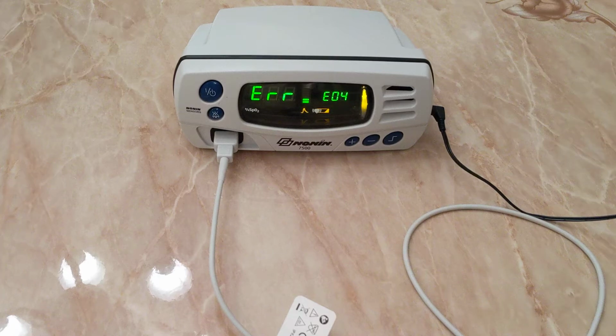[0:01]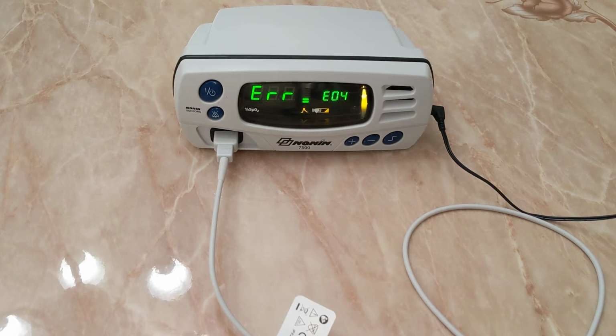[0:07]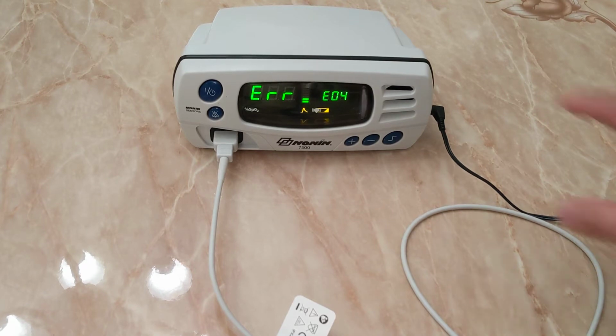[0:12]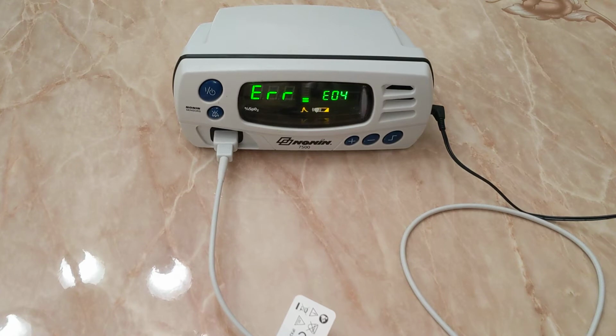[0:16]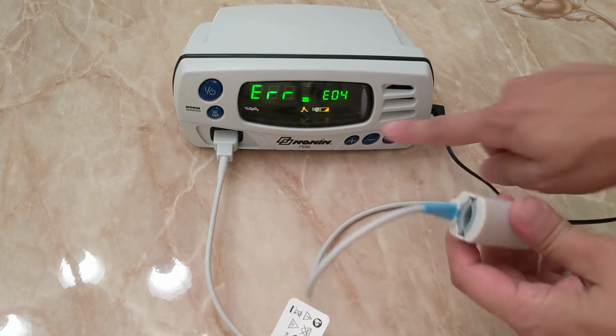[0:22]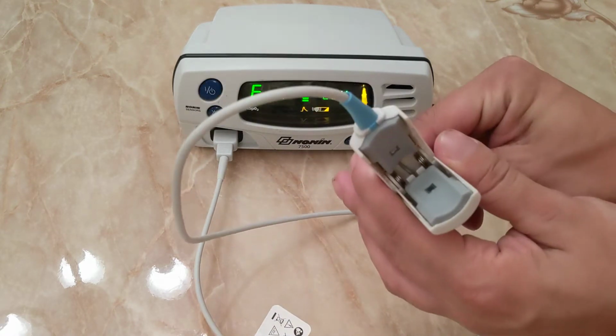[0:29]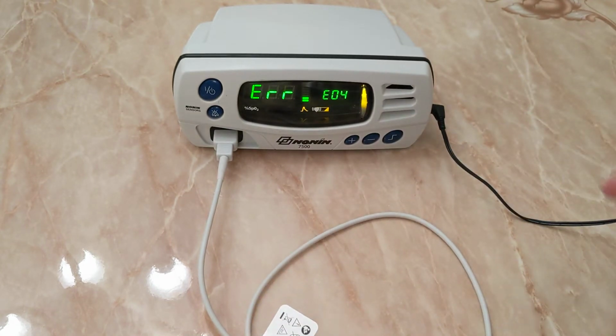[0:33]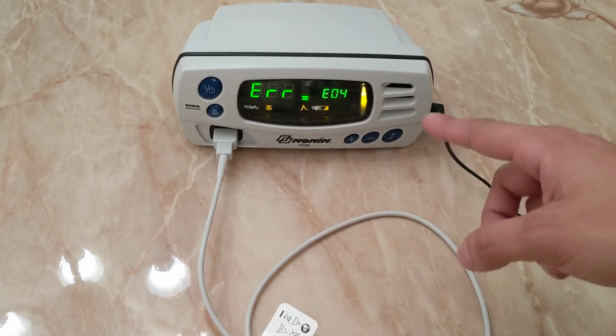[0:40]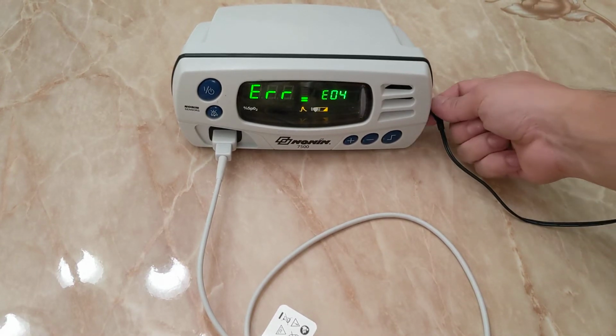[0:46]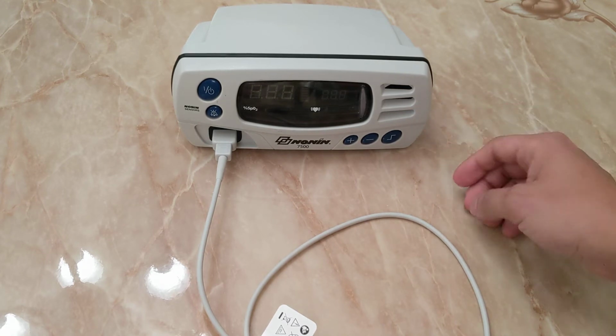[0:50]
And today we have the Nonin 7500. If you didn't get that because of the beep, it's the Nonin 7500. We have error code E04, and as you can see, there's a little battery image that's popping up, and the light on the finger sensor is not turning on. So, I looked up this code and they said that it's related to battery issues. And sure enough, one way to test this is by removing the plug, the monitor immediately shuts off.
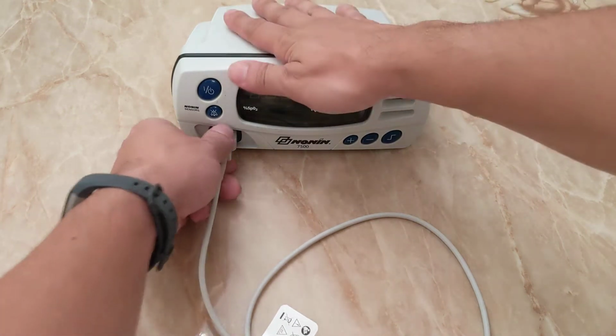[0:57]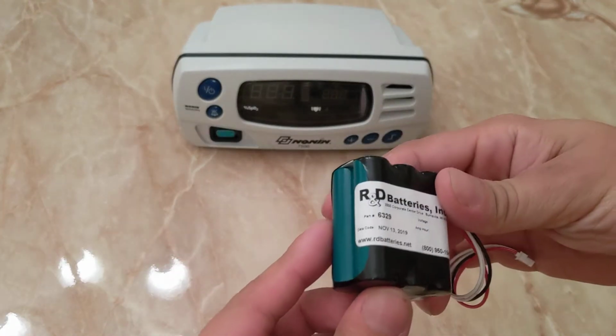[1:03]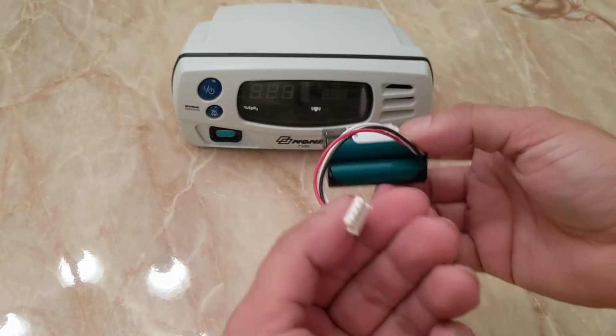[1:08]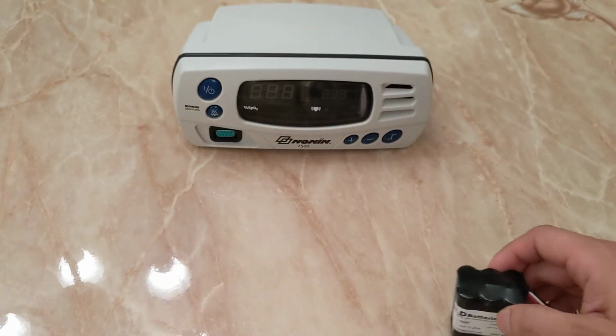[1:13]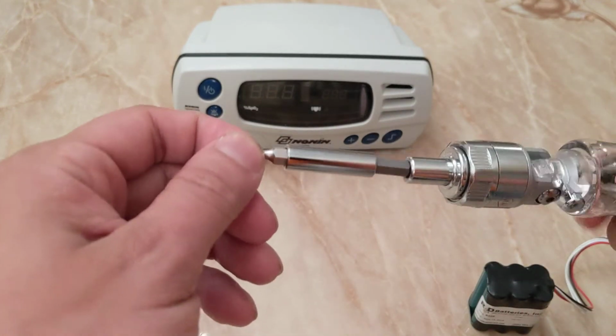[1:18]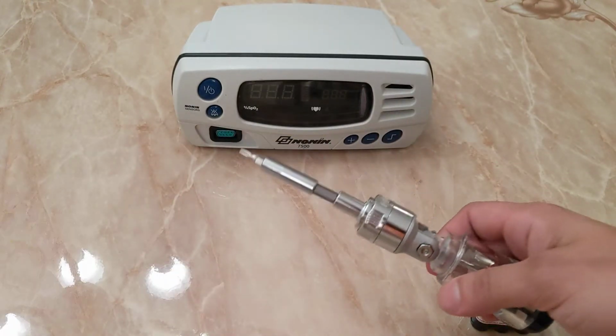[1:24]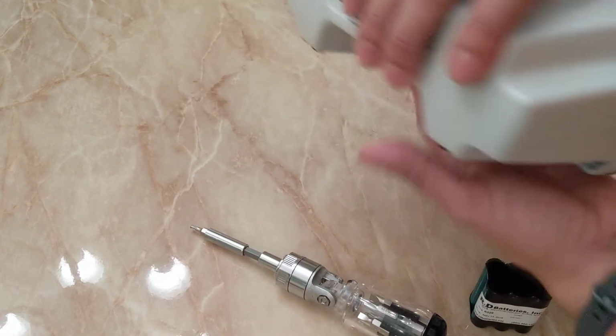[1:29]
So, today to repair this battery issue, we have ordered a battery from R&D Batteries Incorporated, and this is what I got, somewhat inexpensive, and you will need a screwdriver with a T15 screwdriver bit. That's all you'll need for this repair. So let's get started. You have four screws to remove
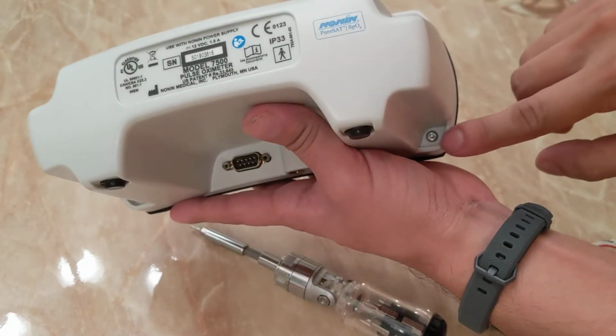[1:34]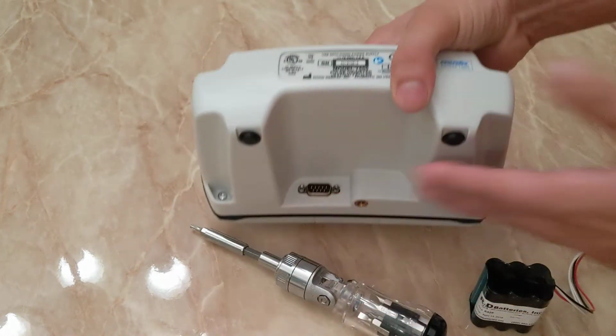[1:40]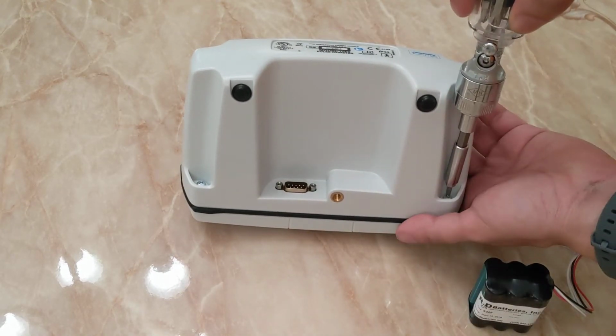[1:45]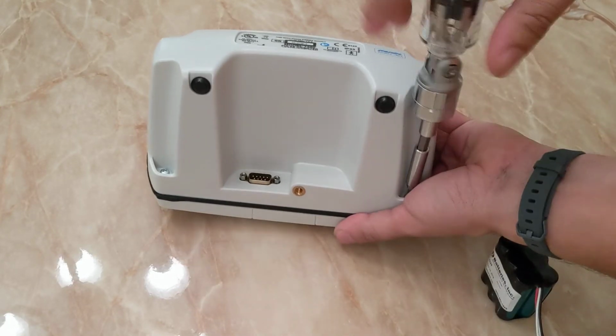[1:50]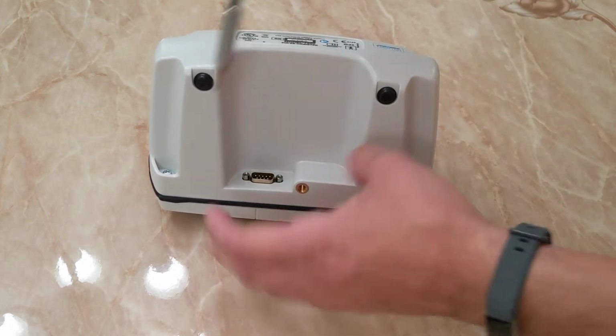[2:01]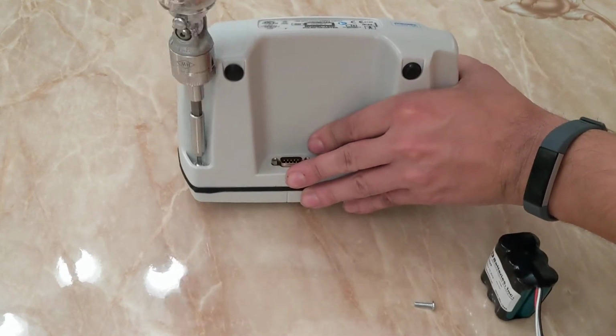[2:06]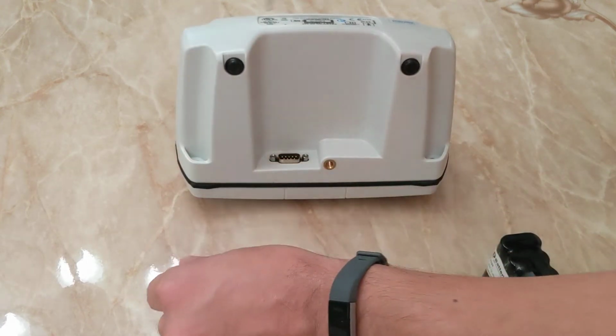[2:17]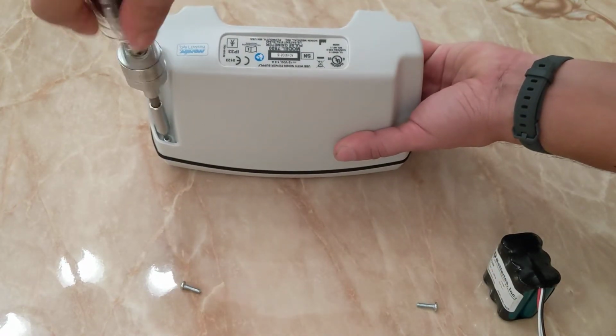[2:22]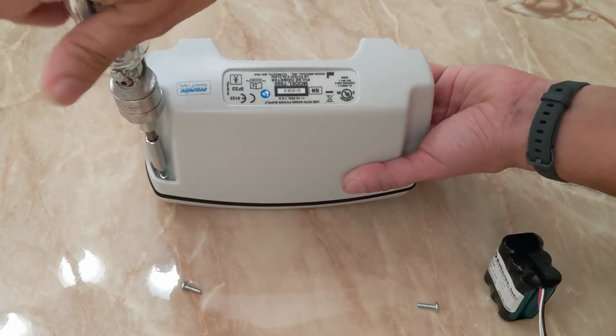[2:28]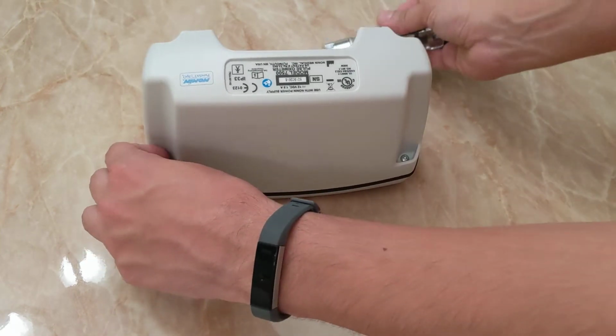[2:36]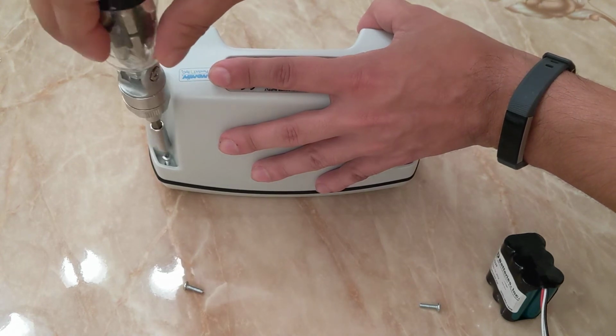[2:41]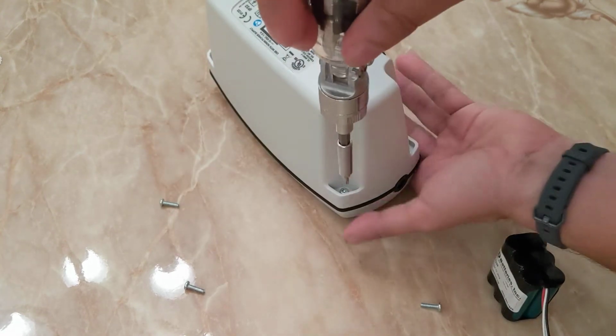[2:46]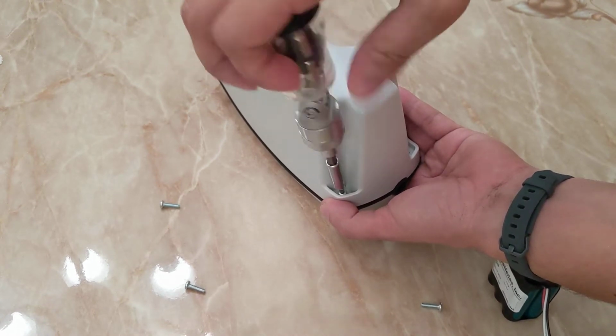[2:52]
on the facing the back of the monitor, and take our screwdriver and just remove all four. This repair doesn't take too long, as long as you have the right tool and the correct battery. So this is our third screw, and it doesn't matter how you pull them out or lay them out, they're all the exact same size. And we're on the last screw.
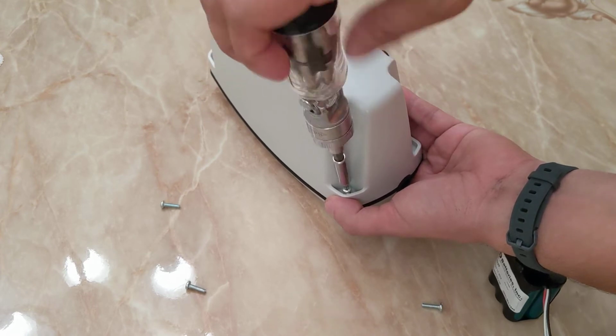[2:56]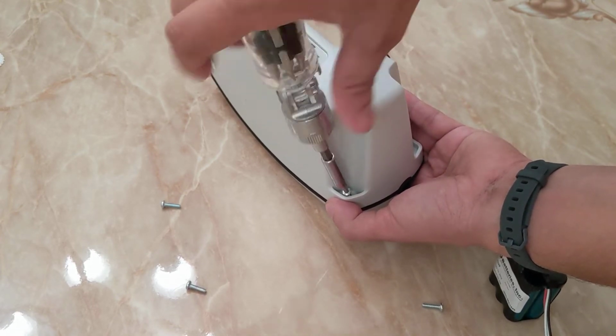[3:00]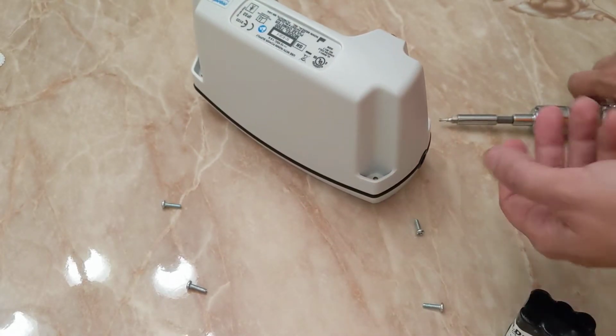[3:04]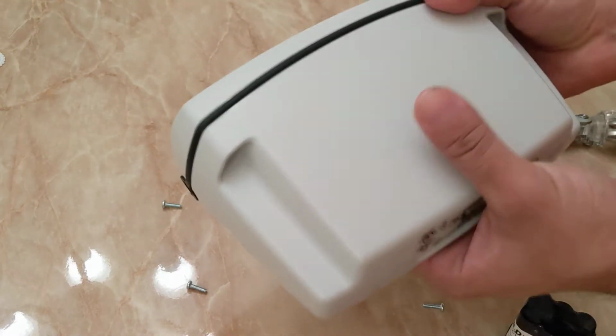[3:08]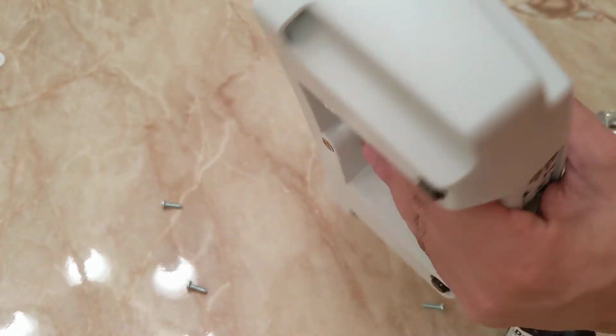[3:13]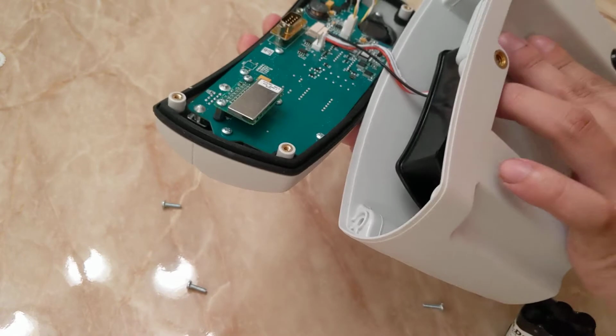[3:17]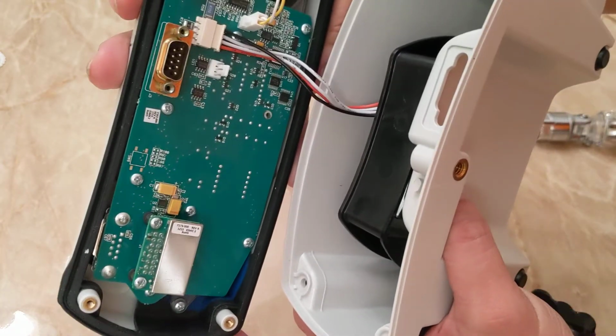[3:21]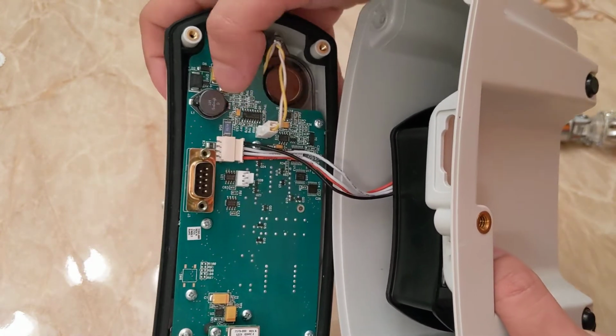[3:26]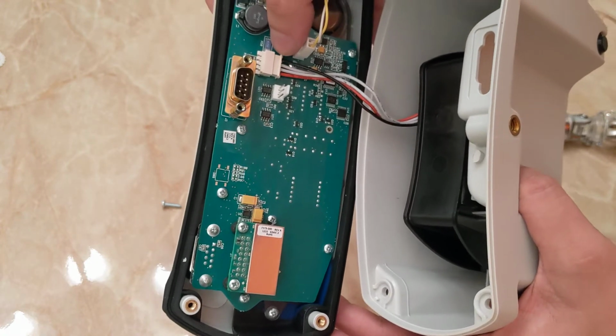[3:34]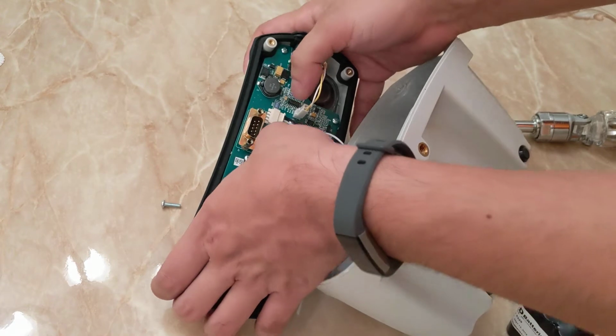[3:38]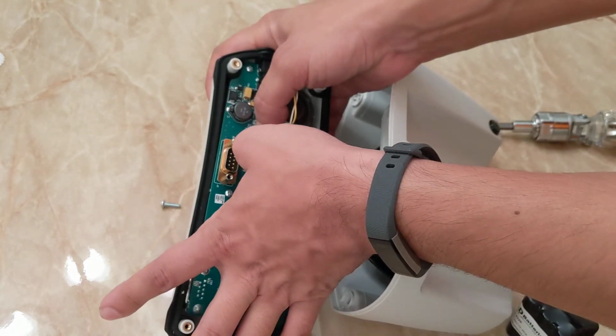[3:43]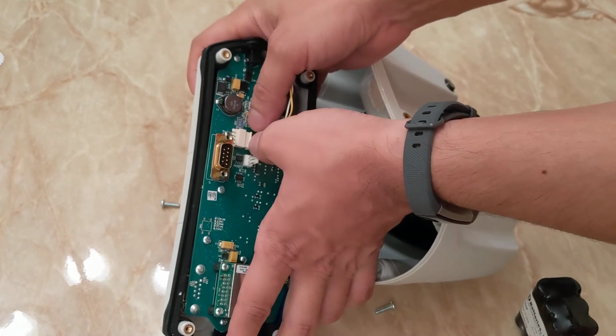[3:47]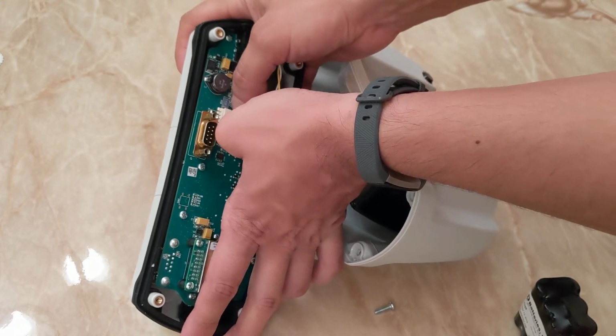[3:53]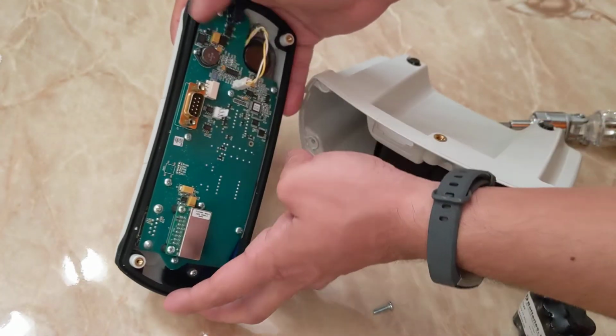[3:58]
Alrighty, so when removing the front, be very careful because there is a cable, the battery cable that actually connects to the back of the monitor, and to remove that you have to slide the connector gently out so you don't damage the connector socket. So, using a little bit of force, not too much, to not damage the connector. There we go.
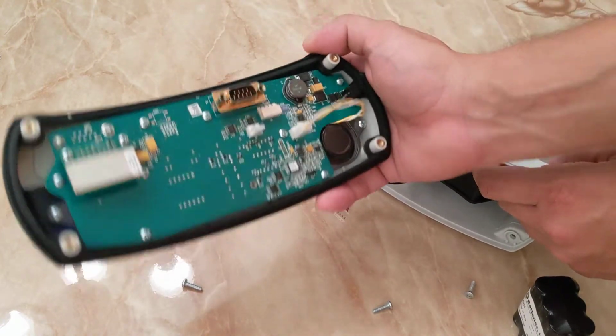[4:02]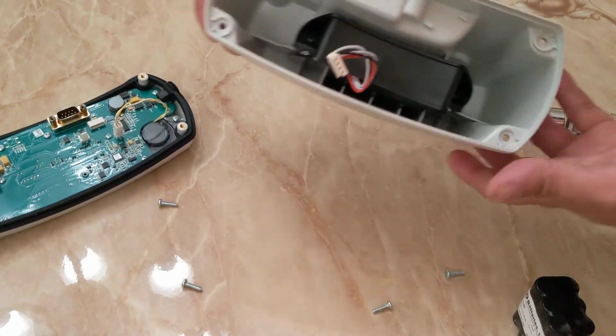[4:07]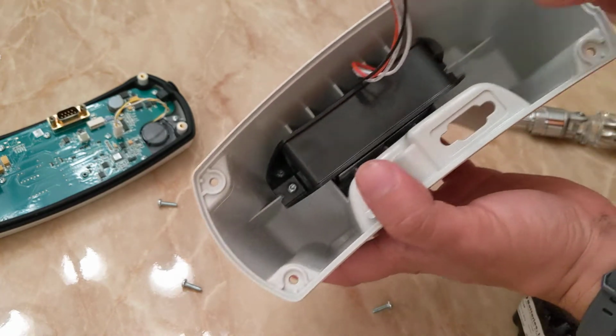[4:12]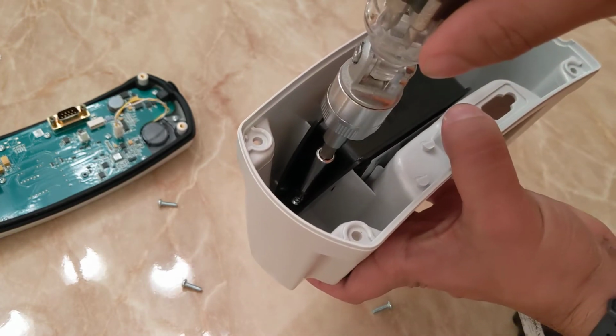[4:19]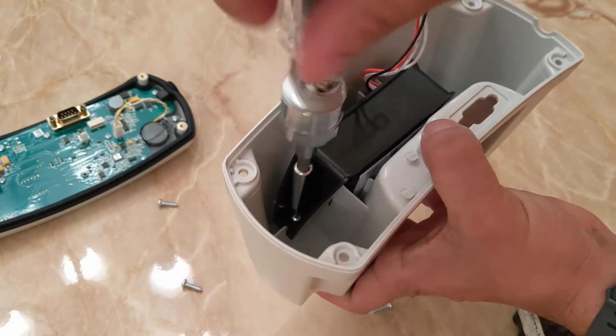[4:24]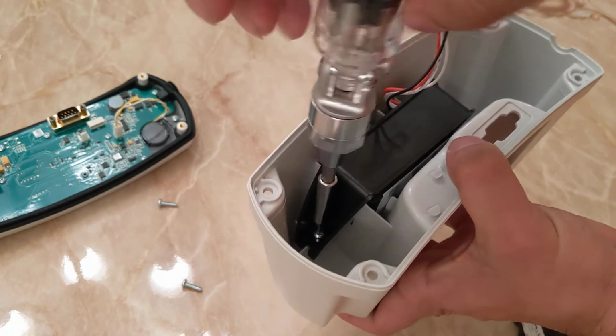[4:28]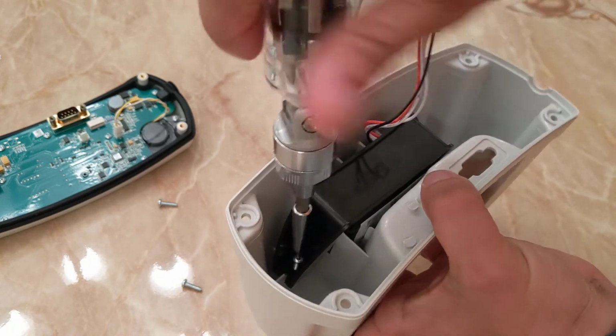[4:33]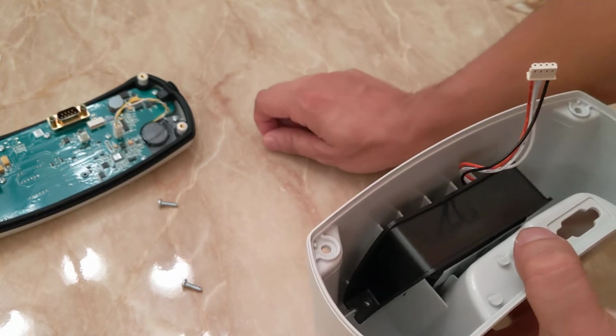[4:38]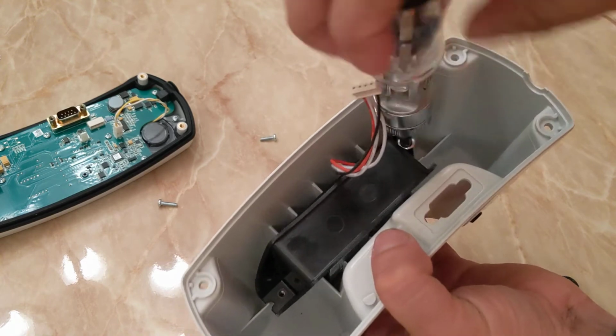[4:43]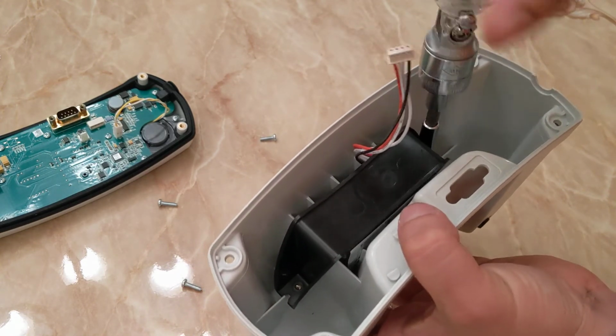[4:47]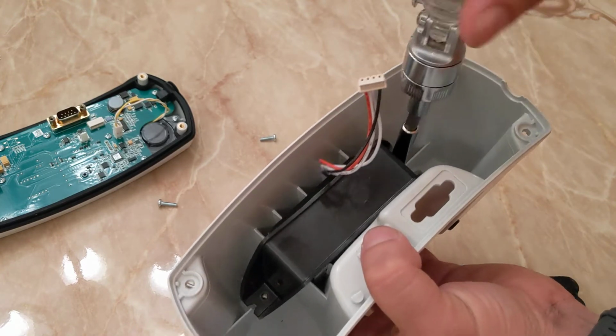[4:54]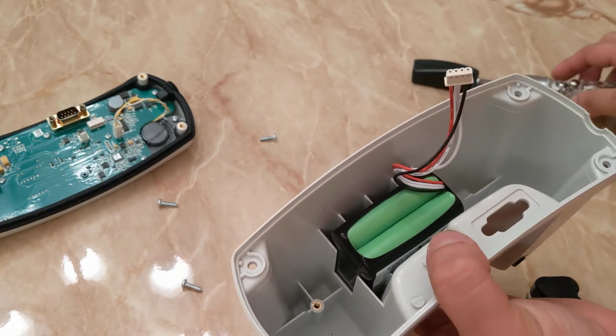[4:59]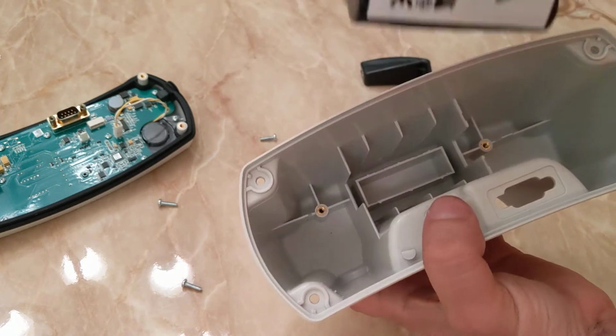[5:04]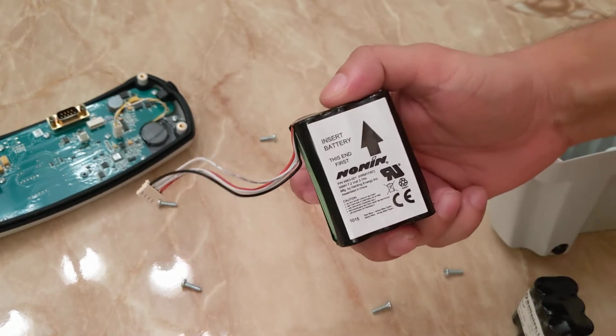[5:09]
We remove the whole front plate of the monitor, and all we're left with is the battery itself on the back, along with this little plastic plate. It has two screws using the same T15 bit. We can remove that. So then the battery just slides off, and this is the OEM battery that no longer is good.
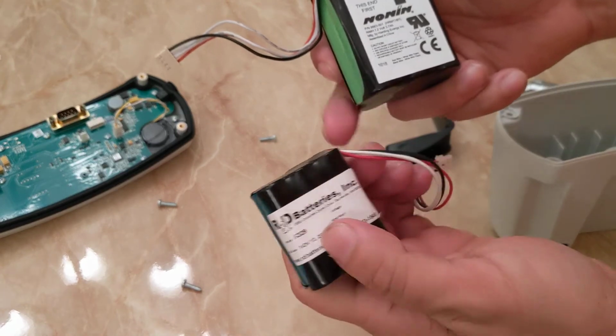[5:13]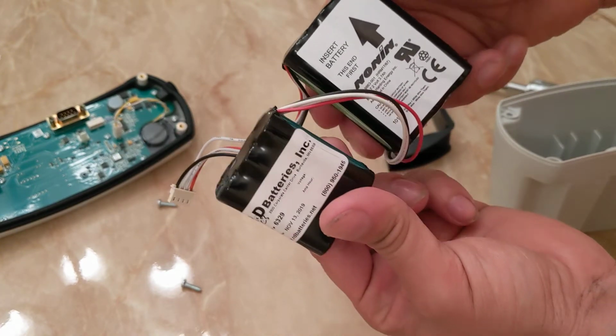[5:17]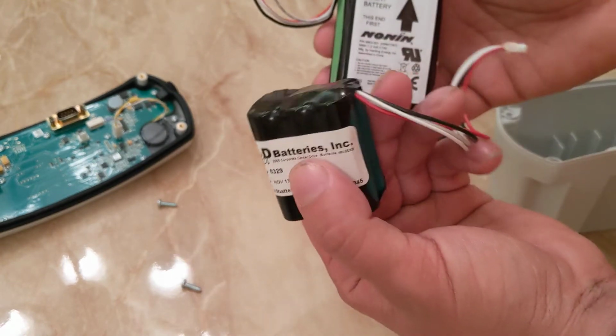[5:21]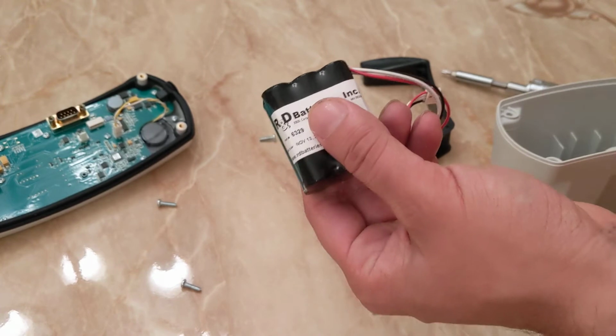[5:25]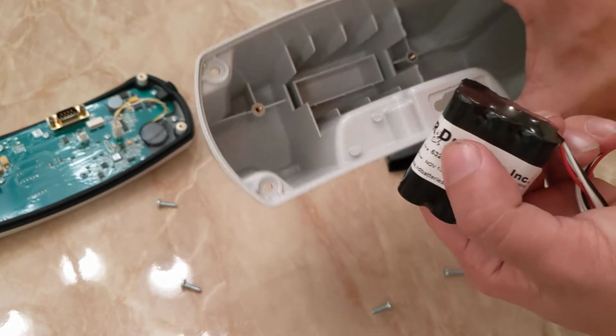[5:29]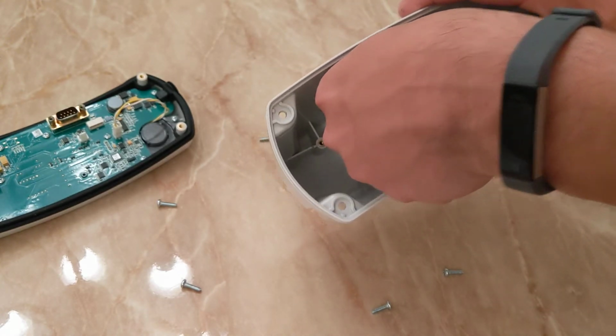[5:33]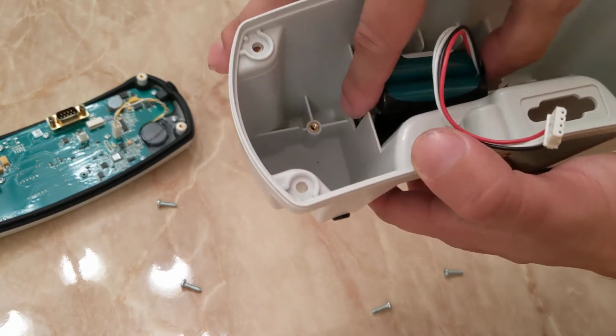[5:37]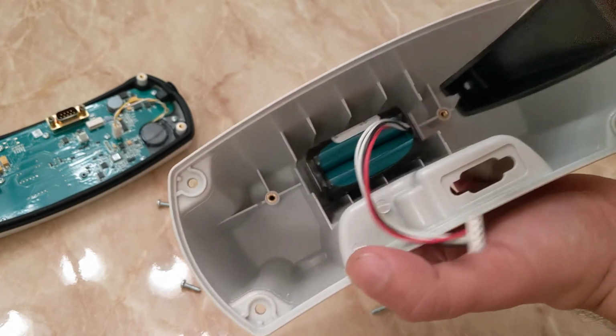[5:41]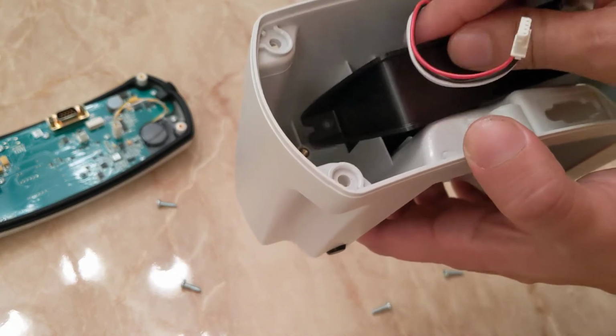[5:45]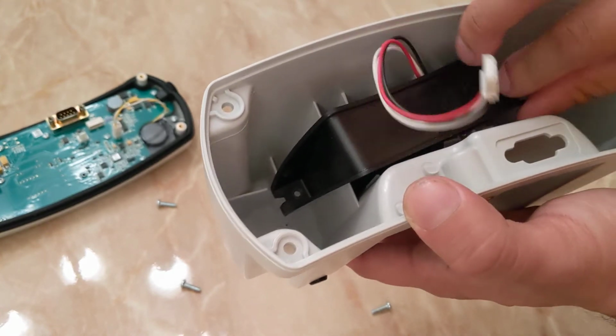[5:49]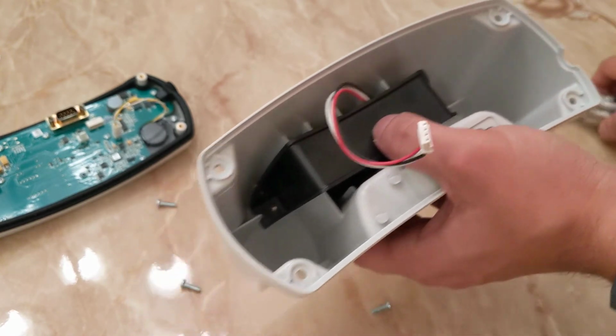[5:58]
I did notice one thing when I purchased from R&D batteries. Their batteries are a little bit smaller. This is not a problem if you don't mind the jiggling in the socket, because it will not stay 100% firm. But it does work. This would be the second monitor I've actually changed this on. And you just place it in there. Yeah, there would be a little bit of free movement, but nothing too serious. If you have your monitor just, you know, in the same spot, it shouldn't be a problem.
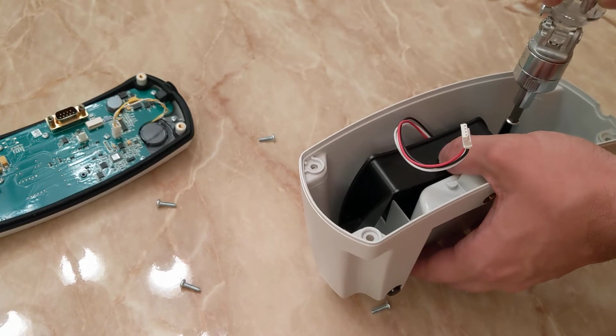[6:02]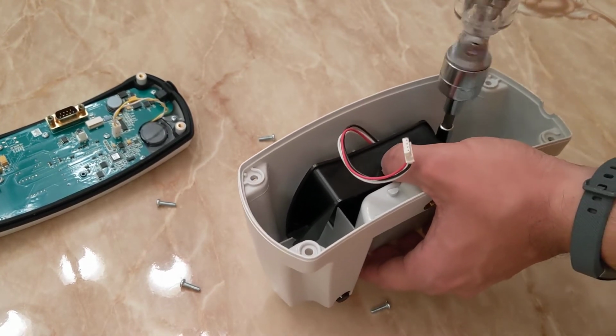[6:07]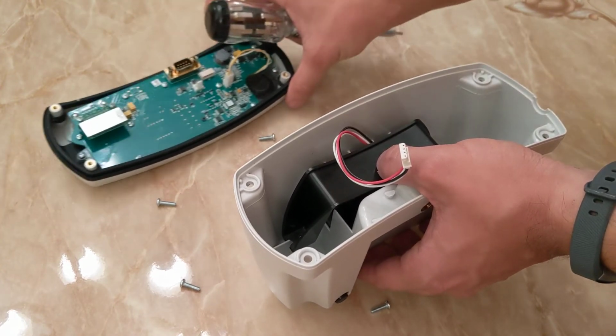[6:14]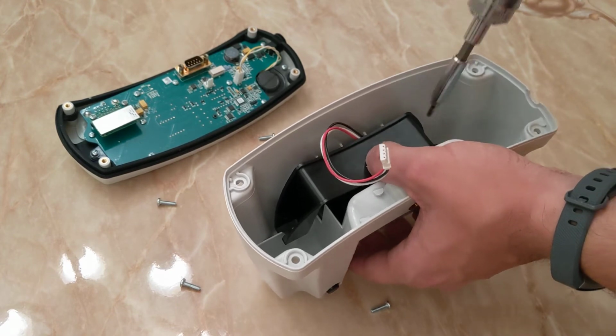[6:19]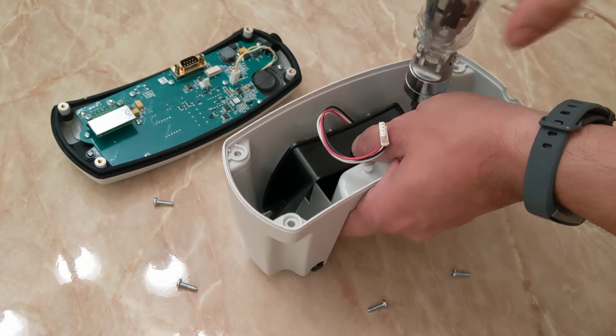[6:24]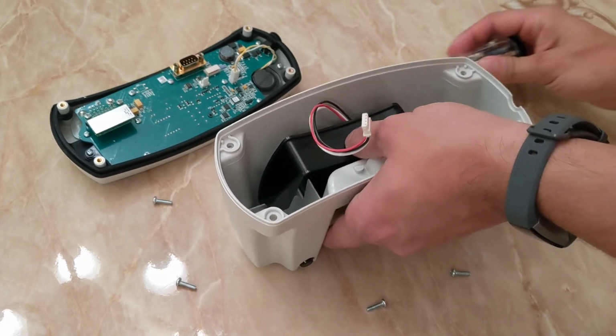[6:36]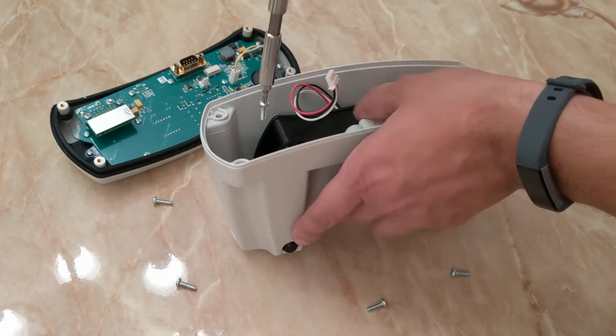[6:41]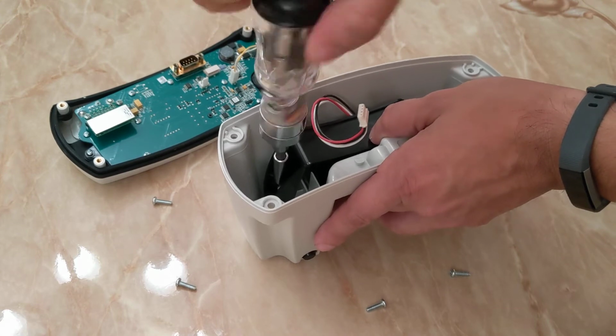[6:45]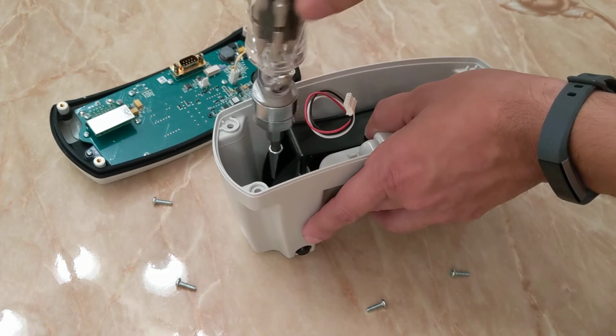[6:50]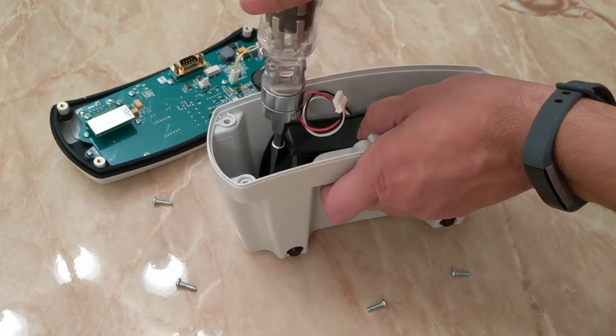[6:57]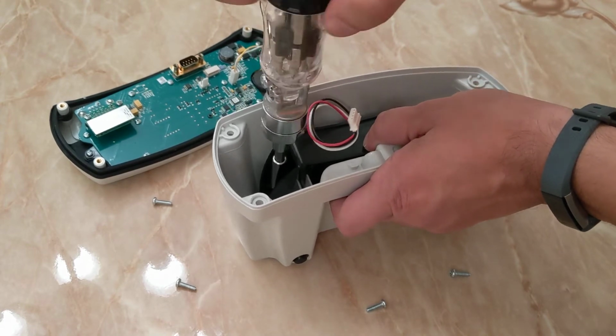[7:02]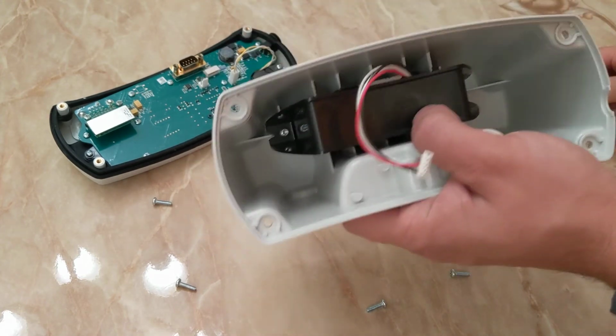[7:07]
So we go ahead and tighten the back plate again with the new battery. You know, take your time, but there's no rush. These things can be a little bit delicate, so make sure to treat it with care. Nice and tight. Again, there will be a little bit of jiggle, but nothing too serious.
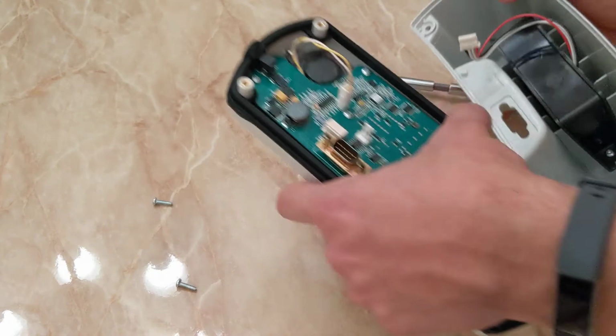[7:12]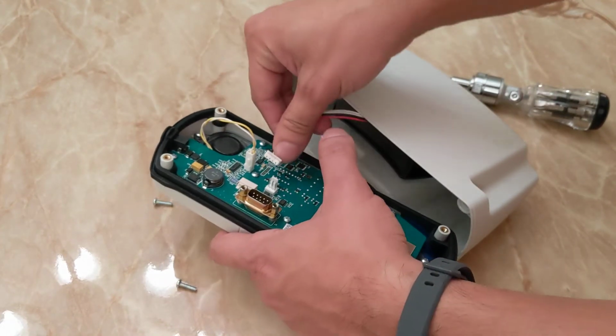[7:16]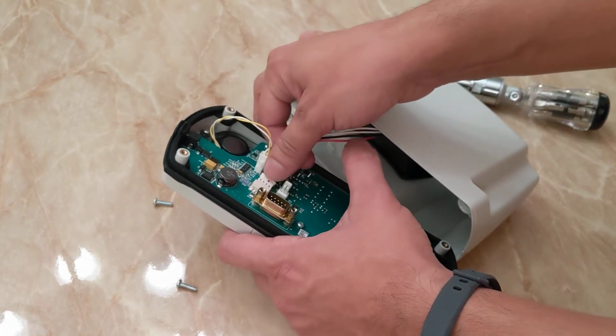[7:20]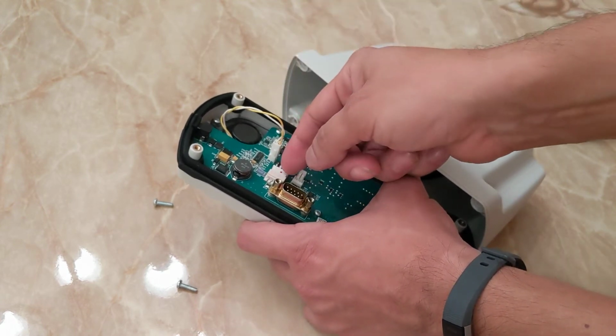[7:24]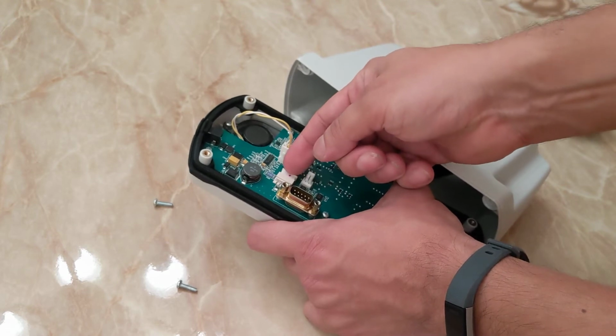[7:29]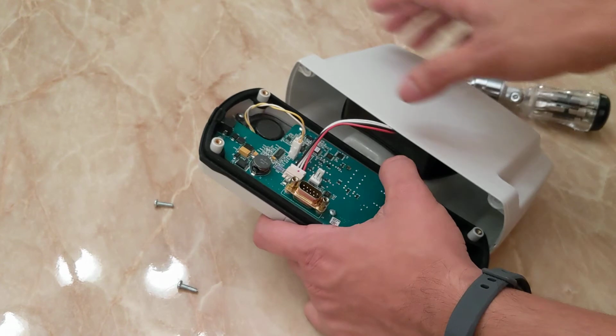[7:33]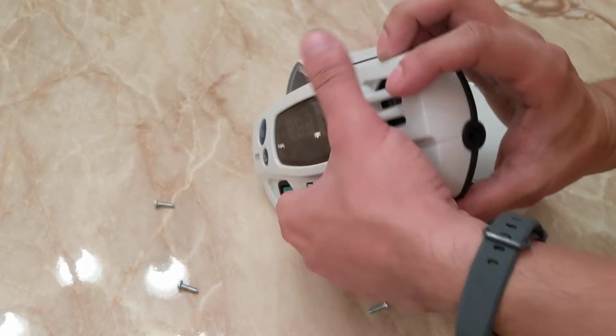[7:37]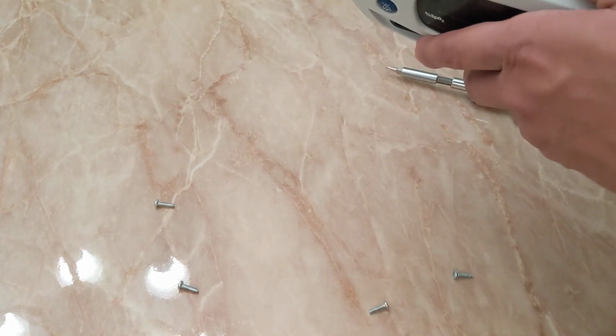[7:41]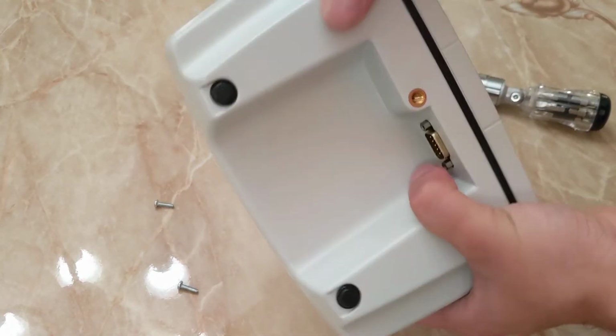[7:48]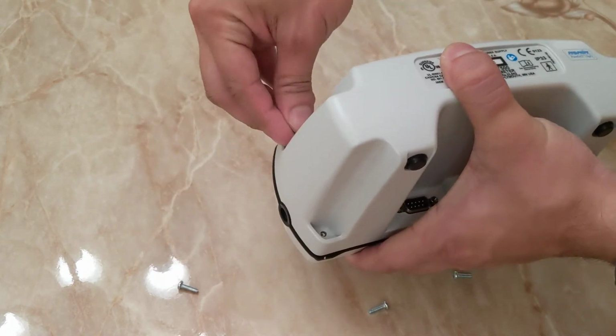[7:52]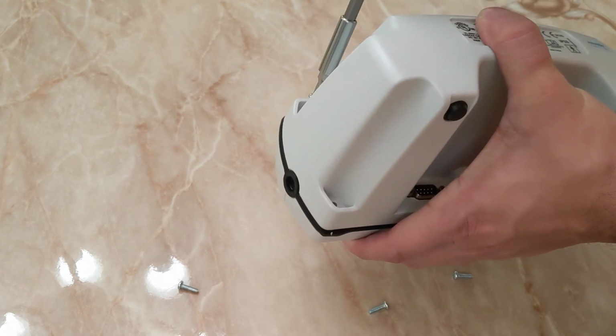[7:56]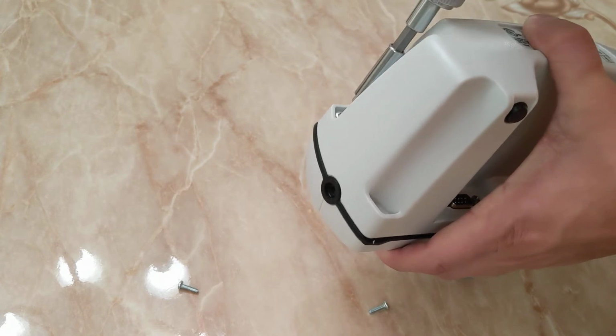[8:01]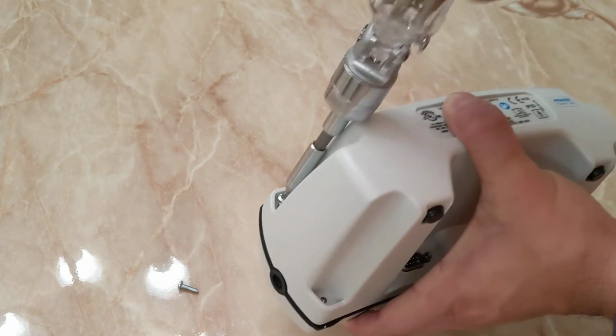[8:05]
And then we reconnect the new battery to the main board, also very gently, not to ruin the socket. It has to go in until you feel the little clicks. And you make sure you align it correctly. And you can feel the jiggle, but I guarantee that this new battery will work.
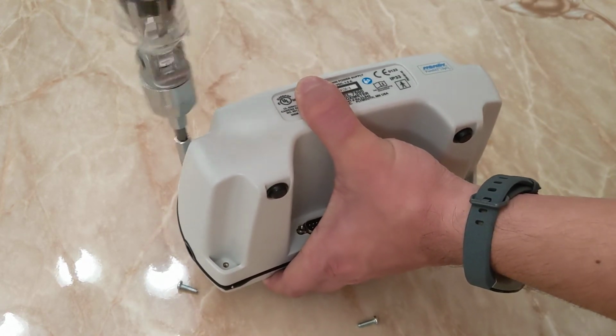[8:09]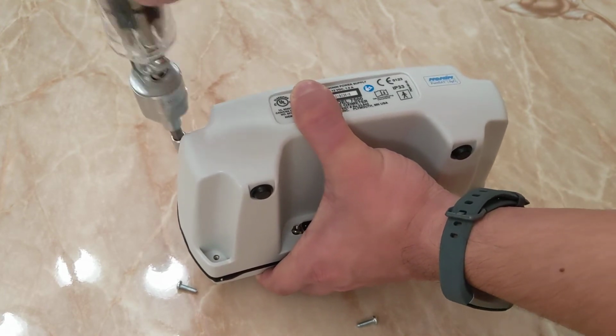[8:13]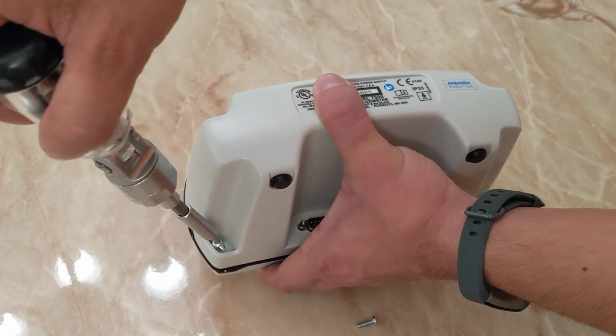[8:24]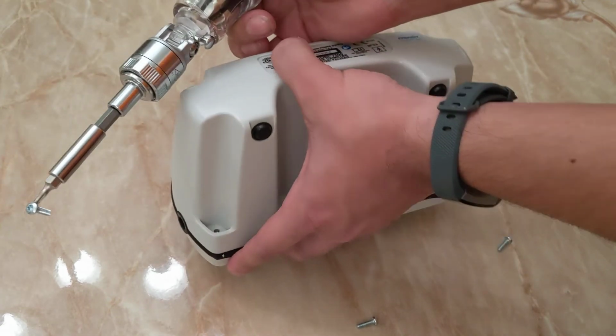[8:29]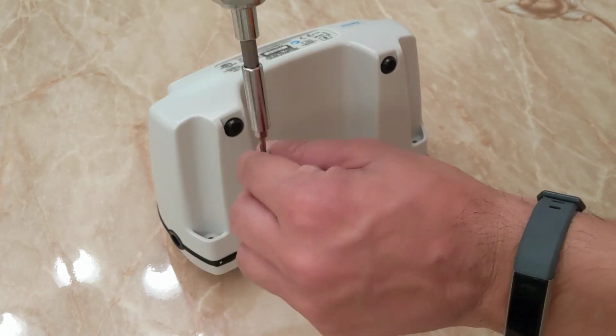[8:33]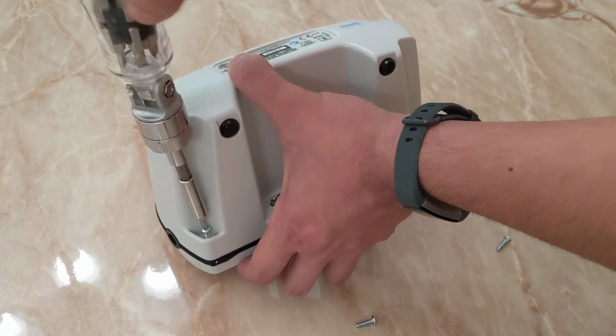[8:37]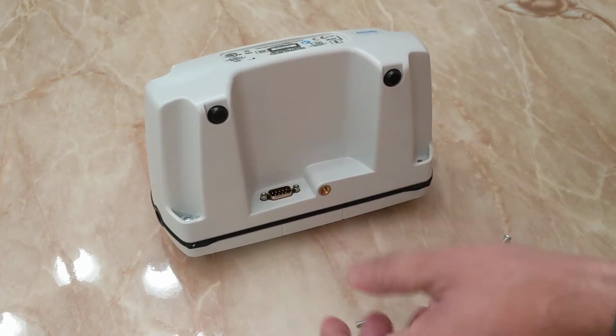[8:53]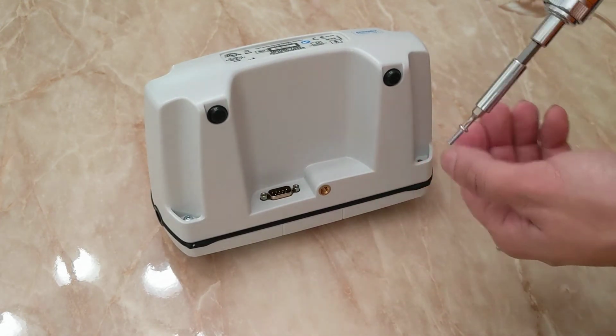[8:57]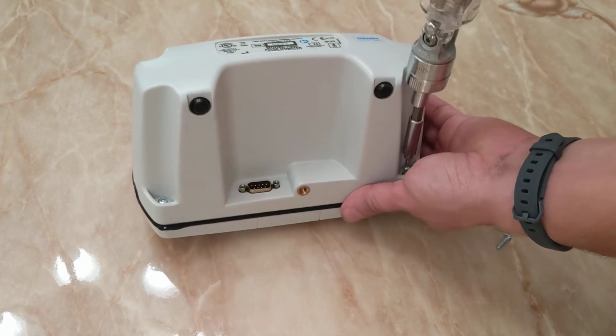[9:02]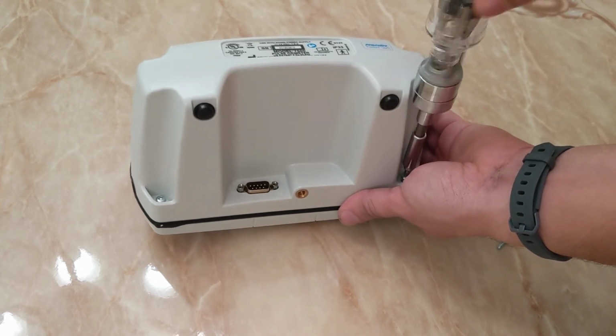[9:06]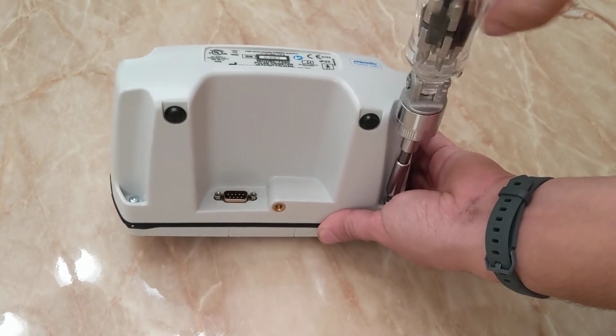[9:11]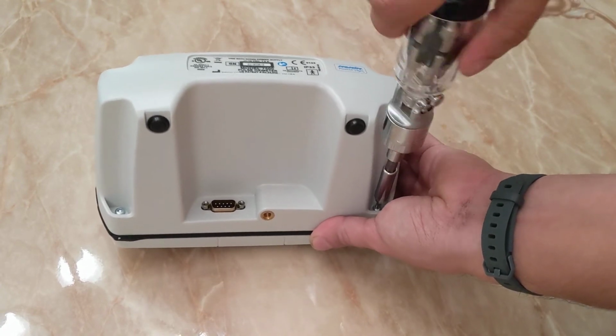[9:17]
Also, another thing to note is that you can also purchase the original battery anywhere, I'm sure. I just choose R&D because they're fairly inexpensive, and you know, these monitors are very expensive. I feel like hospitals or clinics that really need to use a monitor that costs so much money shouldn't have to spend so much money to get it repaired. I called Nonin and their quote was about $200, $250 an hour to just get this battery replaced. And that's granted how many hours they decide to place on the worksheet. But for a very inexpensive price, you can do it yourself.
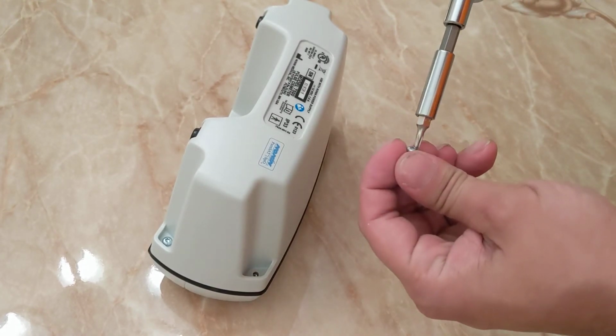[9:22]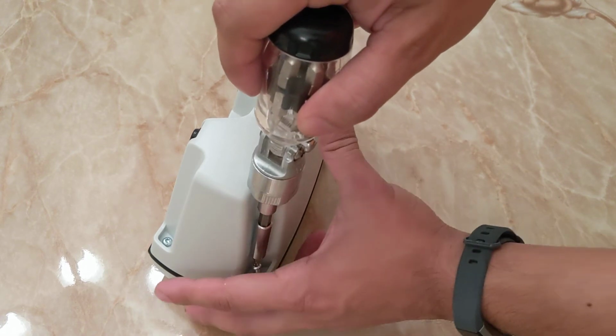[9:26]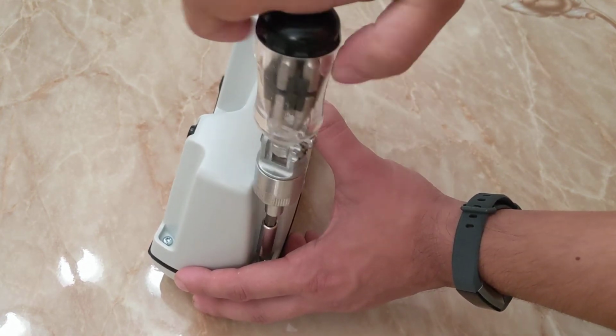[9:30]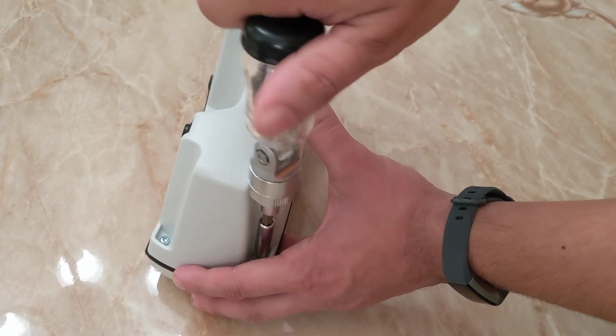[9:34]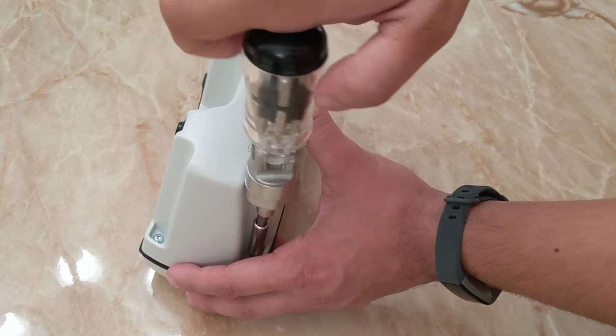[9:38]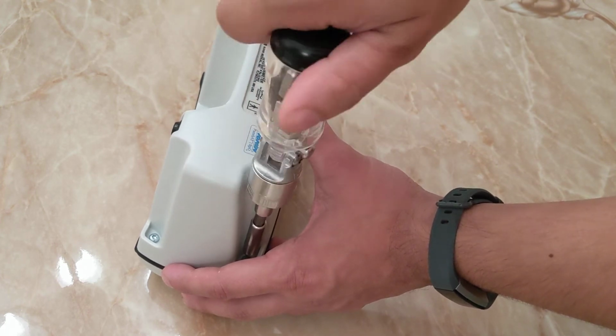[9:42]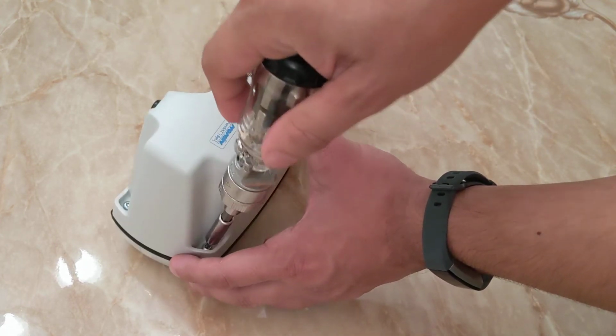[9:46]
And so we're on with the last screw. My philosophy is, you don't purchase Honda tires for a Honda car or Mazda wipers for a Mazda car. You get aftermarkets. They come out cheaper and sometimes even better than the OEMs.
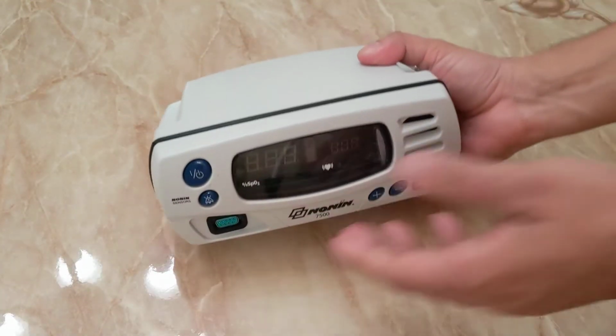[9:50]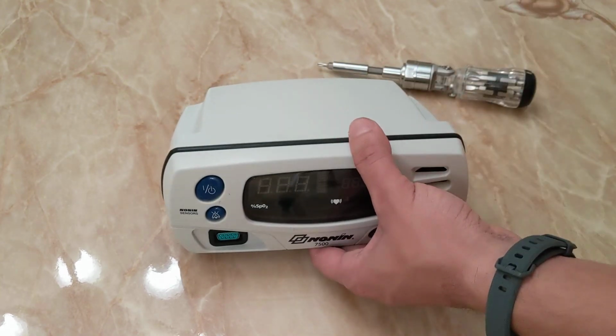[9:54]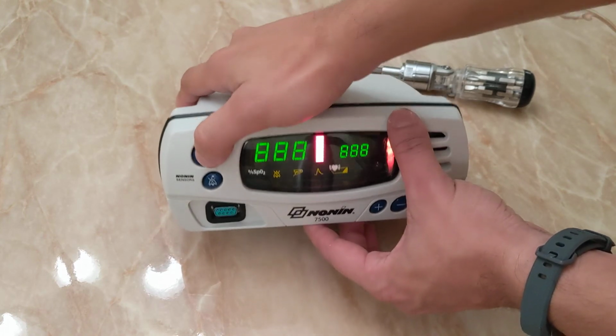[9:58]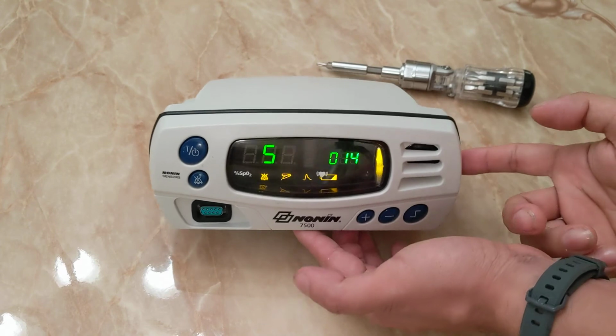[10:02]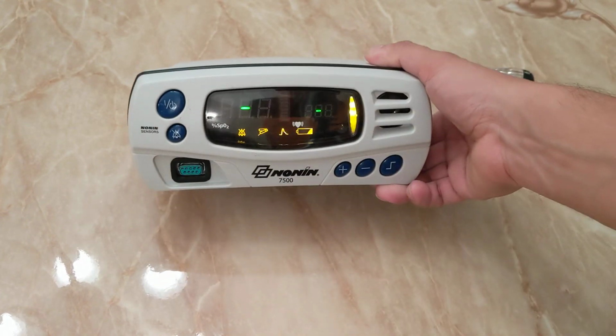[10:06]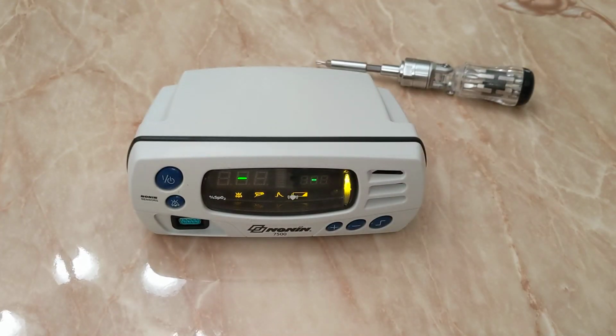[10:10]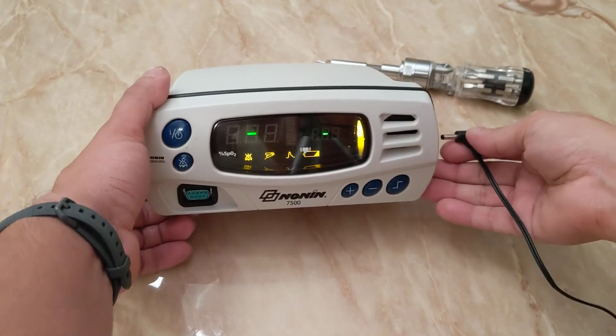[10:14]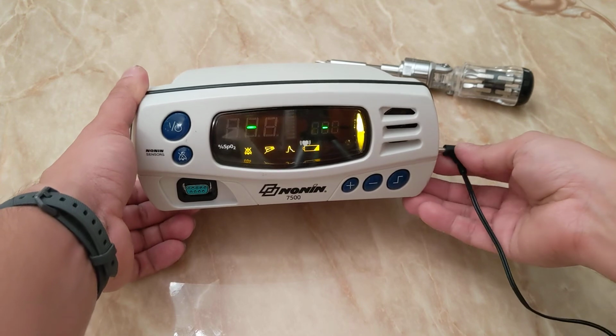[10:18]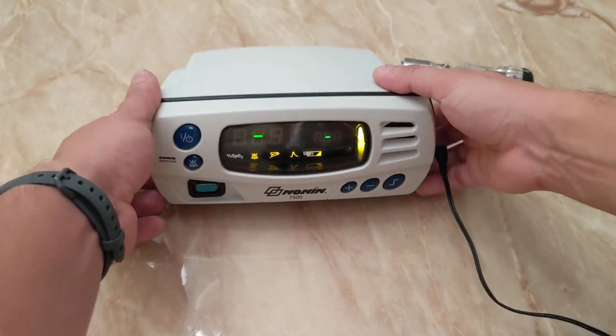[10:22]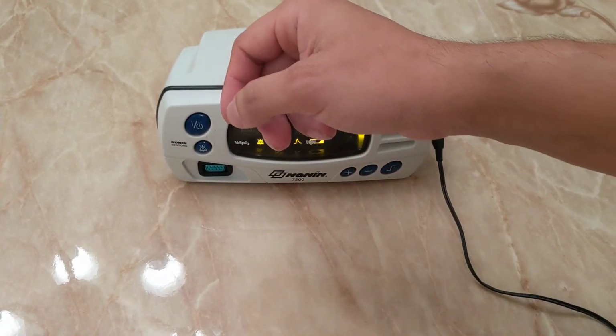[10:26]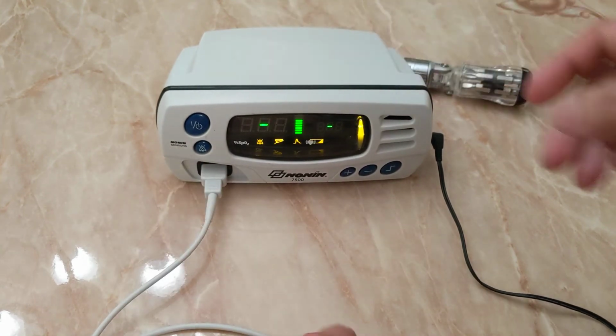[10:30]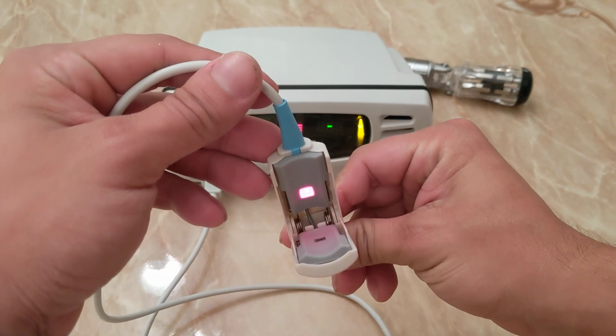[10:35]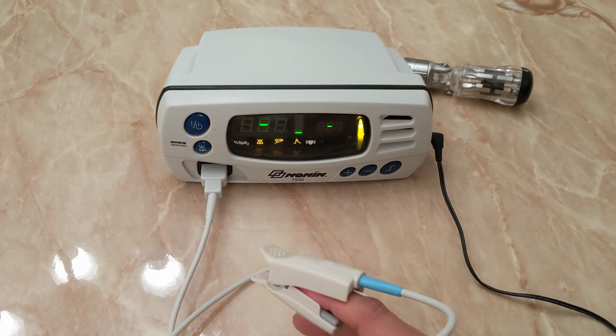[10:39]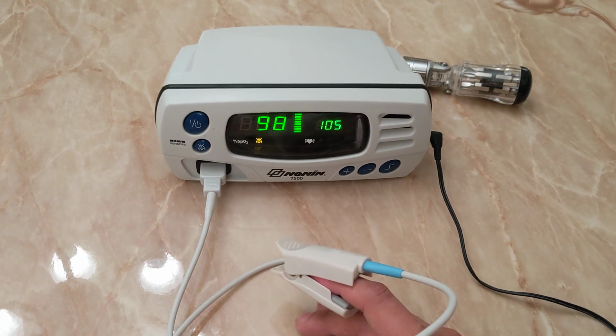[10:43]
So now that we have our monitor all put together, immediately you should see that the new battery is charged. We don't even need to plug it in to test that this thing will work. But just for purposes of showing you that it does keep a charge and stay on. And we no longer get that error code. Quickly notice how the light does turn on the actual sensor. And if we check to see, boom, no more error code, and we have a fully working Nonin 7500 monitor.